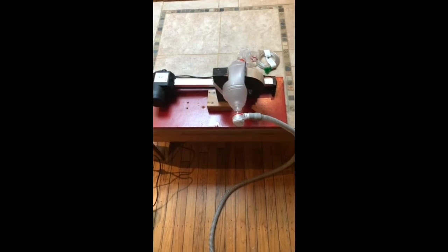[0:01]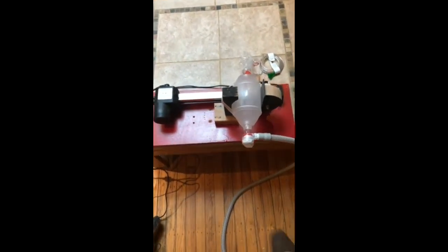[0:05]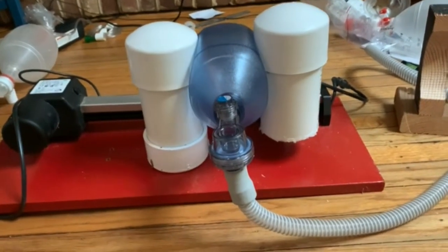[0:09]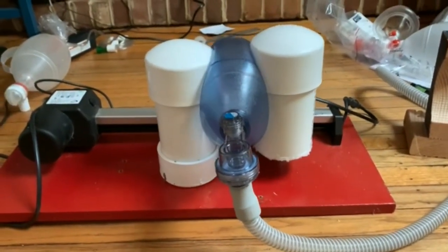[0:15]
In the last YouTube video, I demonstrated the compression of an ambu bag to make a simple ventilator. I then improved the design to let the ambu bag move freely and be compressed by a different shape, as shown in this video. I believe this design is easier because it allows a linear actuator to compress the bag from one side with the same performance as the MIT design, which is more complicated and has to compress the ambu bag from both sides.
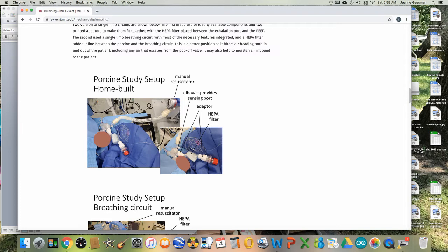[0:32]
However, all designs have the same problem of dead space. The tube connecting the ventilator to the patient is 4 to 6 feet long, and the volume of air in it is called dead space. When a patient exhales, this space is filled with carbon dioxide, which the patient may then rebreathe on the next breath.
MIT's solution was to move a set of valves close to the patient's mouth or endotracheal tube, which will allow inspired gas to be pushed into the patient, but expired gas to be quickly vented by a second tube away from the ventilator.
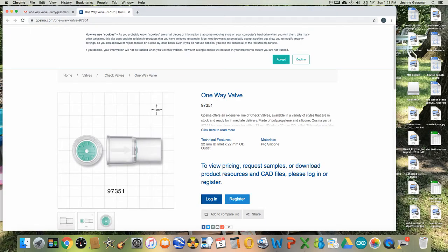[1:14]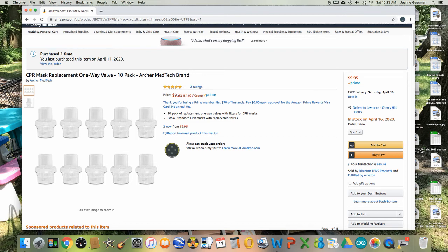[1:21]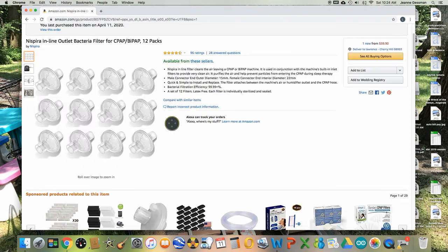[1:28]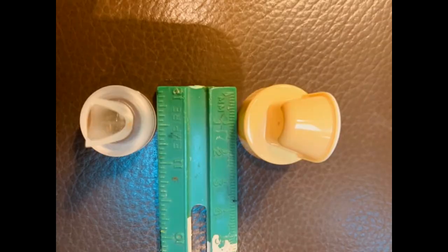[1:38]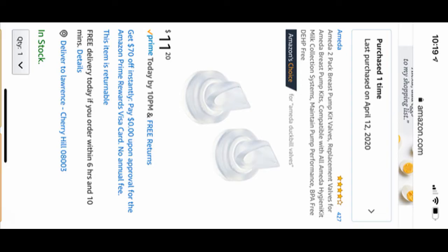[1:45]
When I went to the internet to try to find ventilator valves, they were easy to find, but when ordered, I got a message by email the following day saying that orders were out of stock and would take many weeks, if at all, to receive delivery. So these items were basically impossible to get. To solve this problem, I ordered breast pumping valves off the internet, which were promptly delivered from Amazon in 1 to 3 days.
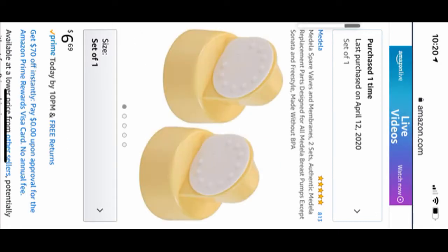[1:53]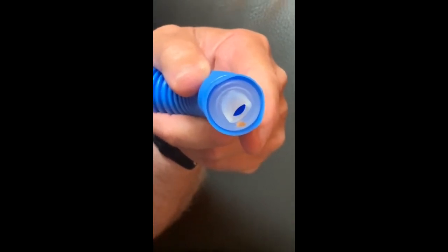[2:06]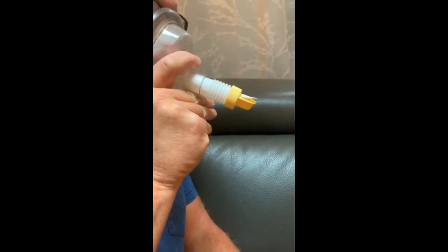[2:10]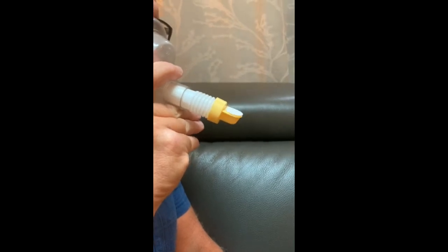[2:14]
The remainder of this video is to show you how to use these valves in PVC piping to make the respiratory circuit necessary to prevent dead space in a simple ventilator. The motion of the so-called duckbill valve is shown in this video, and the motion of the so-called toilet seat valve is shown in this video.
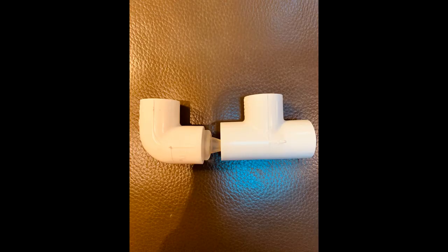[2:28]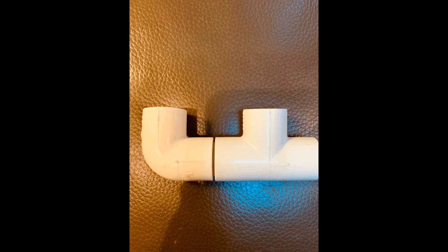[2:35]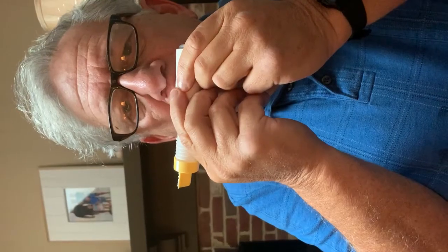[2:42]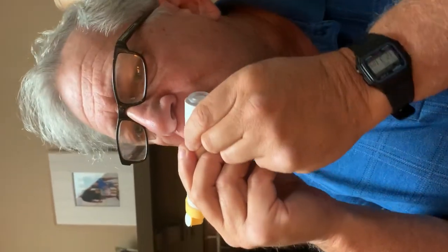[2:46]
Note that standard 22 millimeter respiratory tubing can be directly connected to PVC piping 1/2 inch in diameter. As it turns out, the duckbill valve can easily be fit inside the diameter of the PVC tubing snugly and the PVC tubing closed to create a leak-proof connection. This video demonstrates air intake through the duckbill valve and air exhaust through the toilet seat valve.
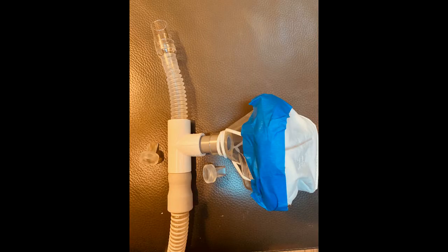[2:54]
This figure shows the ventilator tube coming from the ventilator on the bottom, the connection to the endotracheal tube on the top, and a HEPA filter or an N95 filter on the right. There are duckbill valves inside the tubing in the direction shown outside of the tubing. This setup allows the simple ventilator to push air into the patient from bottom to top through the duckbill valve in one direction and then expired from the patient to the filter via the other duckbill valve to the right.
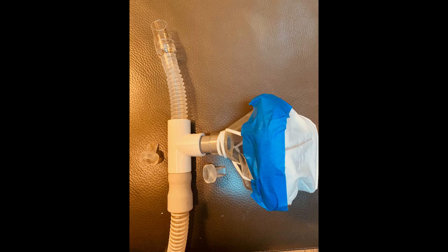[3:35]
The filter above is an N95 mask taped to the face mask from an ambu bag. A HEPA filter material could also be placed in this position.
I hope this video gives you ideas about how to solve two problems: the dead space issue and the HEPA filtering of expired air issue required by the FDA to be solved before they would approve simple ventilators. Thank you for listening, and good luck in making your devices.